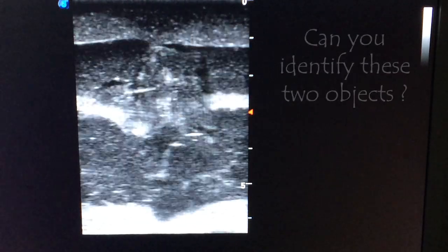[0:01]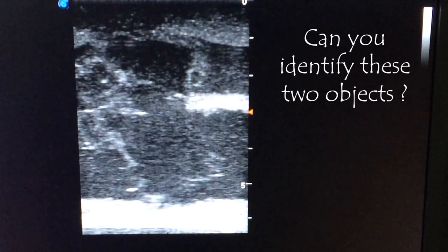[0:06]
You won't see these normally on an ultrasound. Do you know what they are?
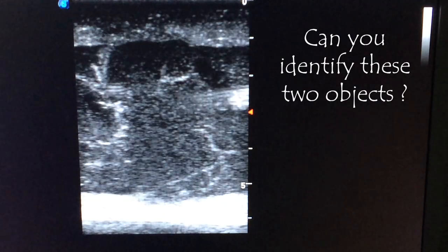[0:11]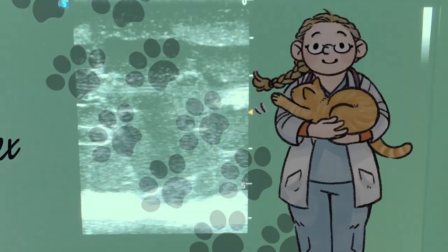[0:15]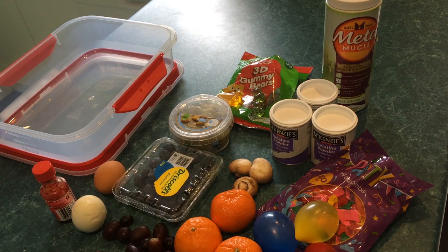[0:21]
Hello everyone, my name is Dr. Ferox and this glorious mess is in aid of making ultrasound phantoms today. An ultrasound phantom is a model that we use to practice, well, ultrasound, and also fine needle aspirates on. It doesn't have to look real, it just has to look real on ultrasound, enough to practice the basic techniques anyway.
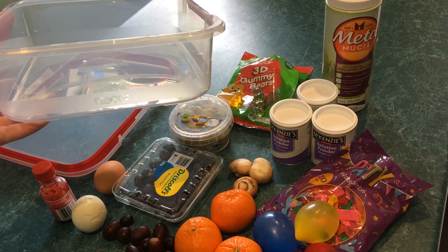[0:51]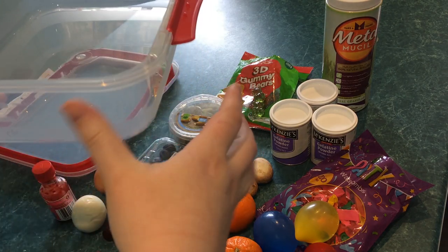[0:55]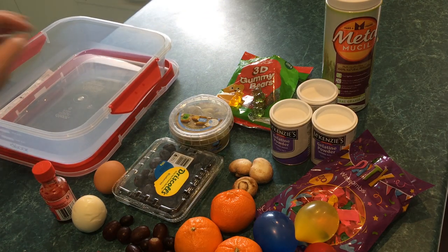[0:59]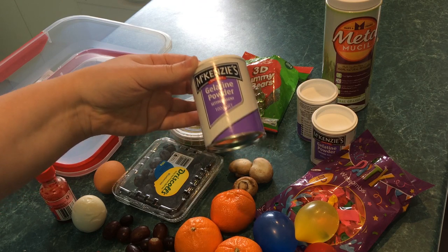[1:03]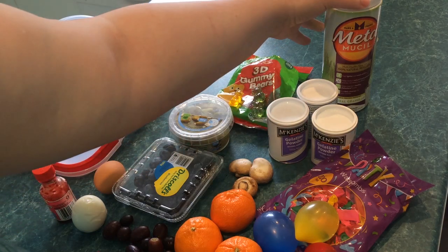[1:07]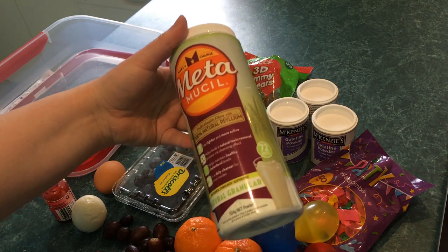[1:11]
So I've got a large container, because this recipe makes about 3.5 litres worth of phantom, which will bring it up almost to the top. It's nice and broad, so we've got lots of space to fit things in. And we're going to make it mostly out of gelatin, because what else sounds like animal flesh other than actual animal protein? And to add a bit of texture, we're going to use some Metamucil.
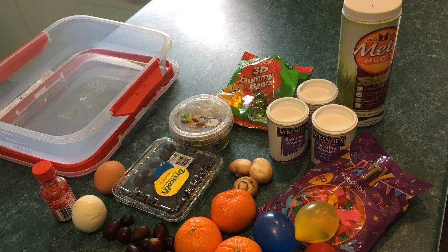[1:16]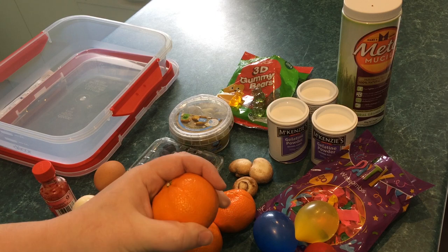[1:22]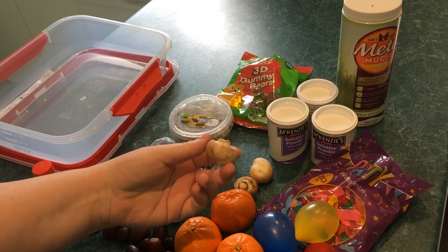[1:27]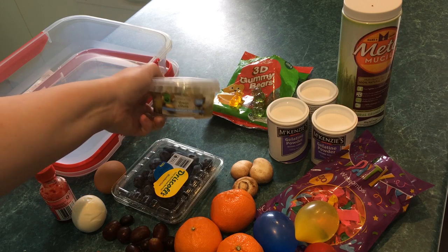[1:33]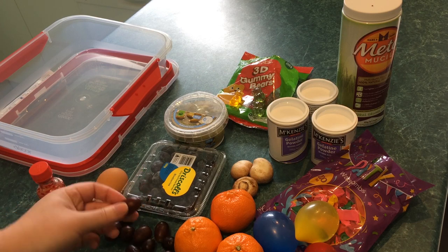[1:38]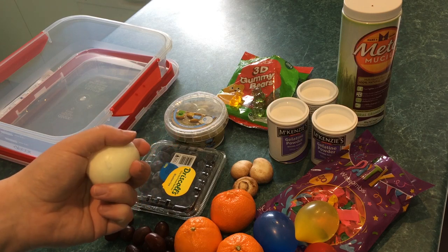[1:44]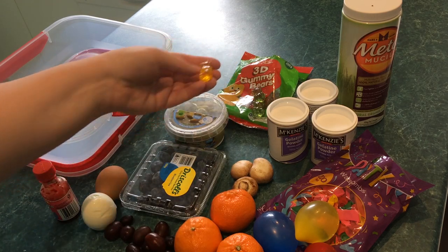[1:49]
Inside the ultrasound phantom, we're going to hide lots and lots of fun things to find. Whether that's relatively large fruits, because the skin on these things shows up really well. Some interesting little shapes in the forms of mushrooms. Olives, because everyone tells me they look good on ultrasound. Some blueberries. Lots of little grapes. A couple of hard-boiled eggs, because the yolk should look different to the white. Some gummy bears just for fun. The ones that are standing up look better than the ones sitting down.
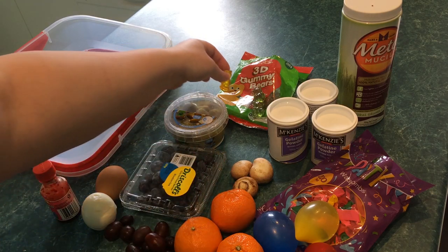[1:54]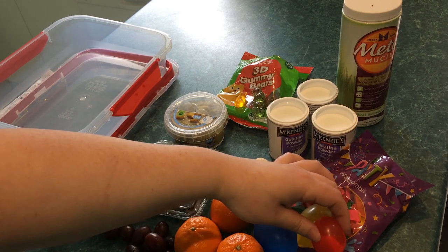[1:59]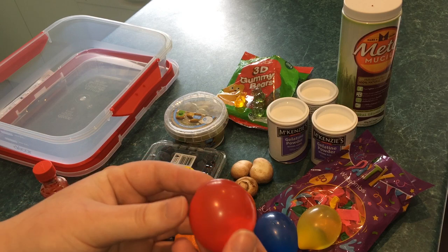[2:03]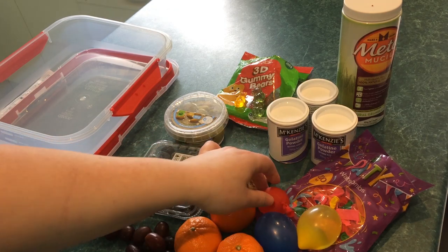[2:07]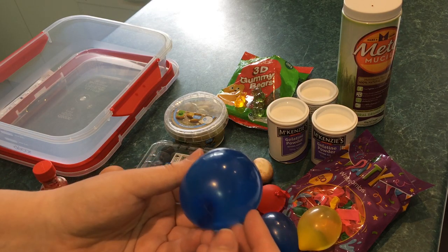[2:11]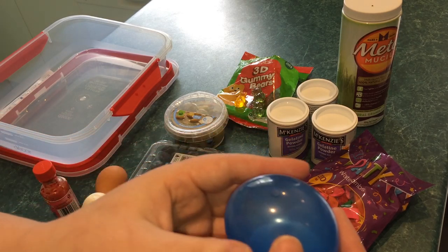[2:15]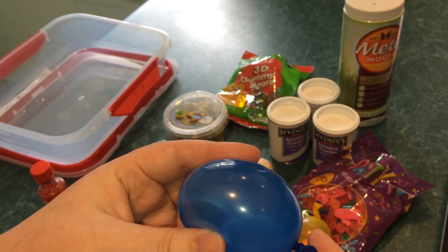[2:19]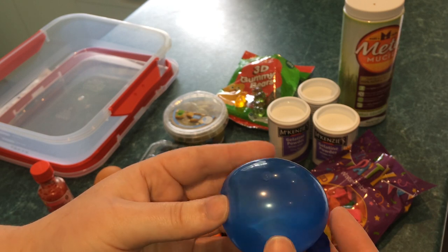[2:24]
And a couple of fluid-filled bladders. Not meant to be anatomically correct, just to practice what they look like. Now, when you're making these, make sure you don't accidentally get any air bubbles in them, because ultrasound won't see through air. So even if you get a little air bubble like this one, and I do hope you can see it, your ultrasound won't penetrate the beam and you won't see it very clearly.
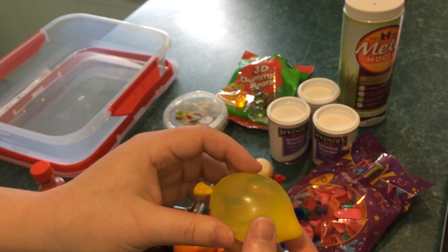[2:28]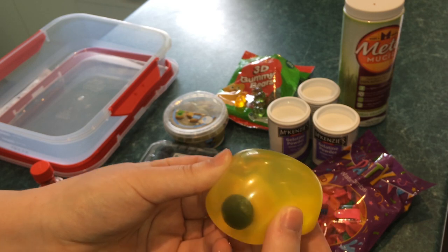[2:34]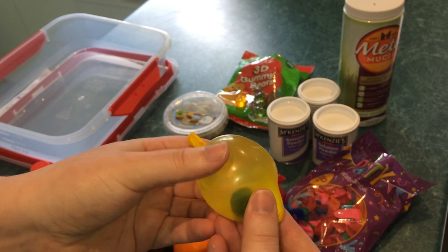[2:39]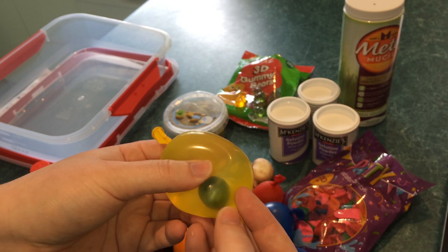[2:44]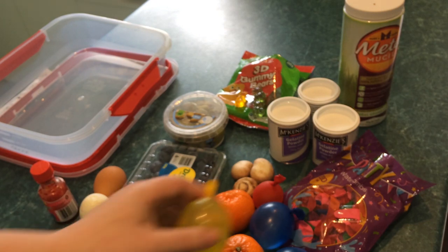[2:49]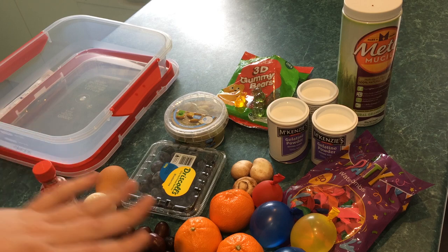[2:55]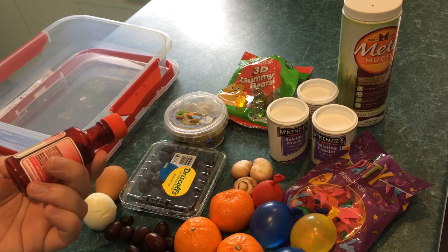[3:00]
If you're feeling adventurous, you can also go and add extra objects inside those bladders, pretending they're bladder stones or something. But once again, because this is a blueberry, it's got little pockets where air likes to get trapped. Make sure that you haven't got any air bubbles stuck on it or it will look weird. Oh, and normally you would use something like milk so that you can't see through the gel when you're practicing. But because this is for an open day when members of the general public get to see it, I'm just going to use food dye instead.
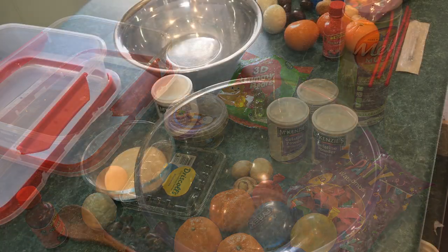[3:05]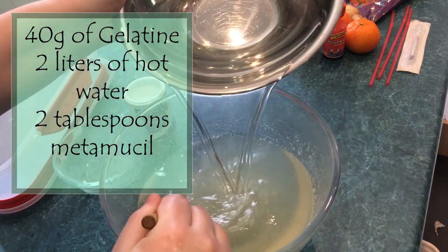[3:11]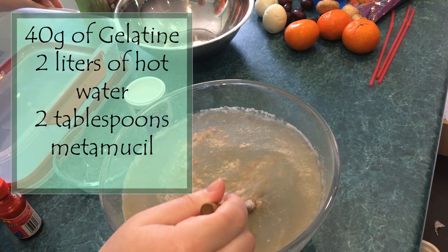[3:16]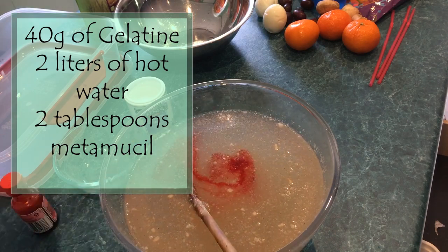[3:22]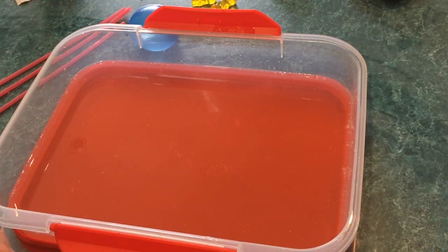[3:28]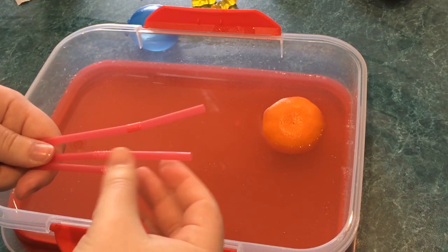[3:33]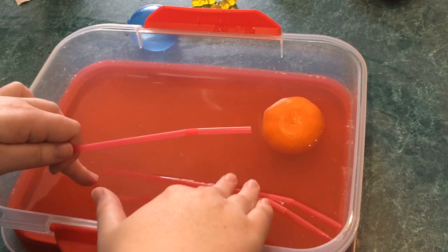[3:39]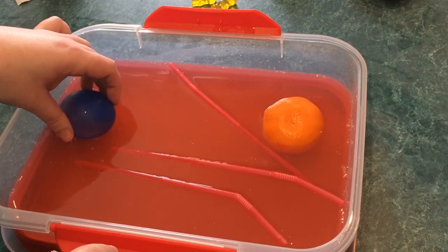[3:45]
So for the bottom layer, we start with 40 grams of gelatin and we mix it up to a total of 2 litres hot water. Then we add about 2 tablespoons of Metamucil to give it a more flesh-like echo texture. Careful not to get any lumpy bumpy bits or air bubbles, because ultrasound won't see through air. To this layer I added the largest, heaviest fruits, because they want to sink to the bottom, a couple of plastic straws, which want to float, but I made sure I had gel mixture running up through them, again because air bubbles make it difficult to see, and I added one of the bladders.
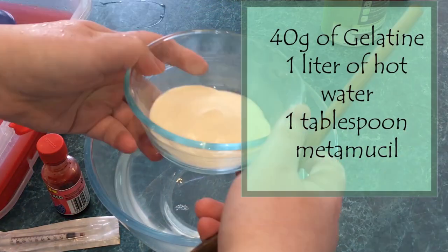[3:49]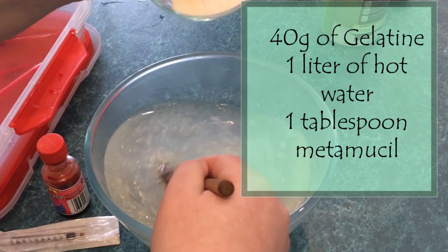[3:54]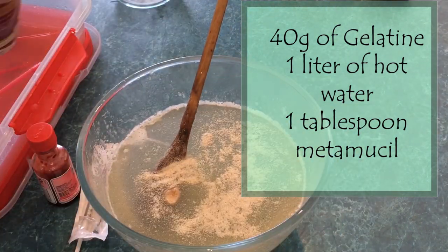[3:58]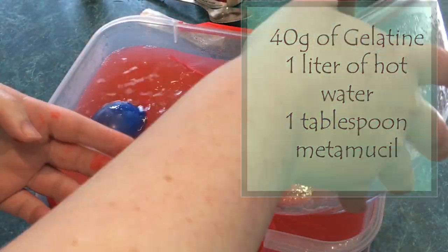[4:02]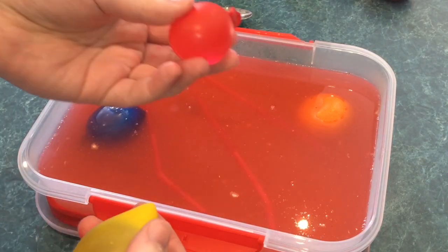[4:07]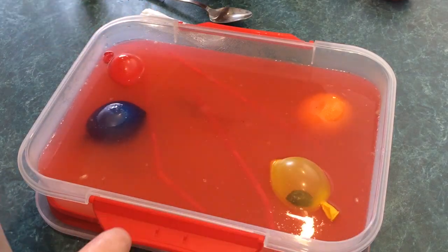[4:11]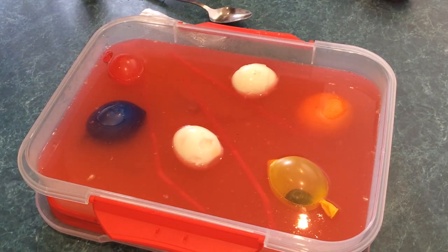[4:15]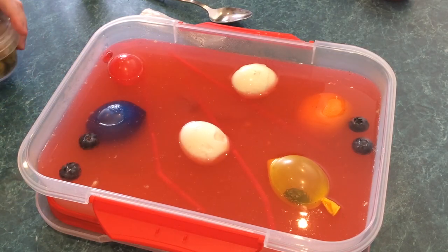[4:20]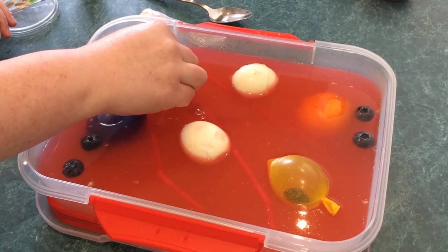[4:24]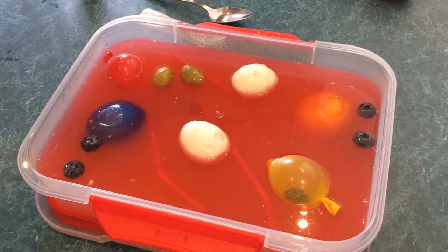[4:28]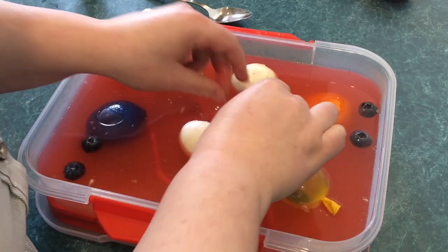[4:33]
For the second layer, it's twice as concentrated, so it's still 40 grams of gelatin, but you mix it up to just 1 litre of hot water and about 1 tablespoon of Metamucil. To this second layer, we add all the other objects that we want to hide in here. So our bladder with our foreign object, the plain one, both of the eggs, which kind of want to sink, all of the different fruits. So the blueberries, the grapes, the olives, add the gummy bears, and remember that they will move, some will float and some will sink, but that's okay because you still have one more layer to go to cover everything else up once it's set.
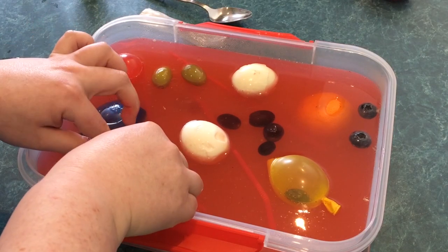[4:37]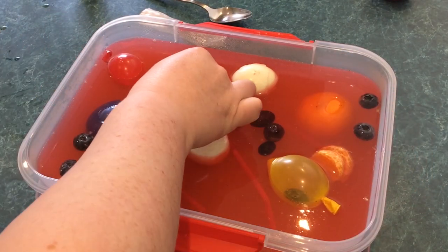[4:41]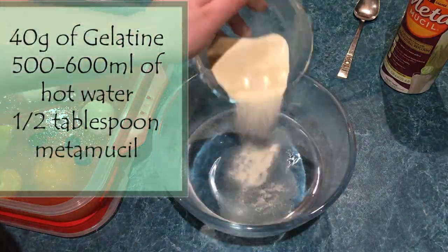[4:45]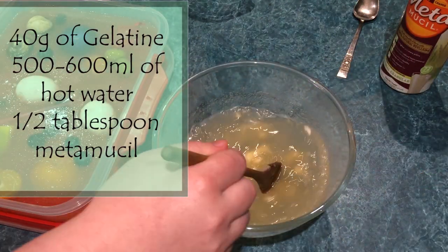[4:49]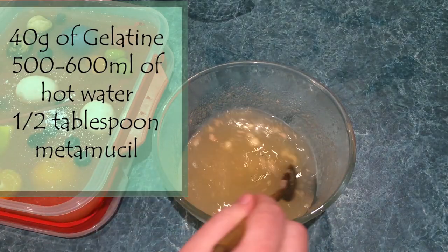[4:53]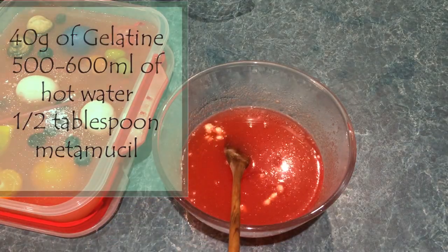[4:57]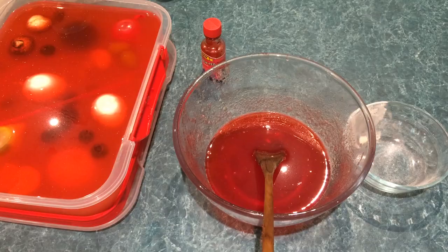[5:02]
The final layer is very concentrated, with 40 grams of gelatin to 500 to 600 ml of hot water, and just a little bit of Metamucil. Again, really important, no air bubbles in this layer. And because I didn't quite have enough, I made some extra just to cover the top.
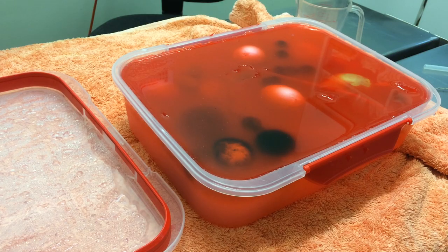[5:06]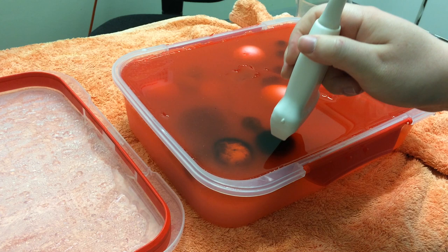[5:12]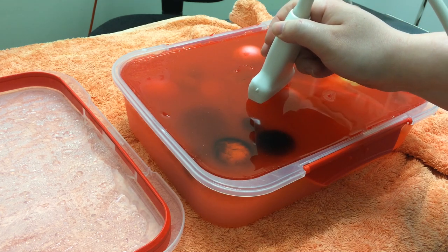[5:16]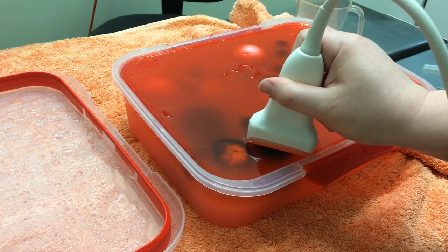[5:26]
Using the ultrasound, you just have to put a thin layer of water across the top of the whole thing and then hold the probe flat against the surface. Move slowly, which is just a good ultrasound technique, and remember to rotate 90 degrees if you find an object that you're not sure about what it is.
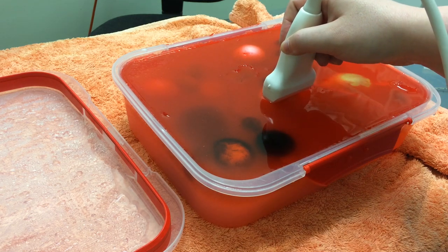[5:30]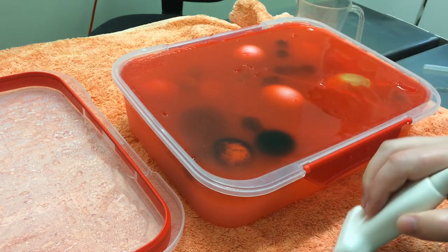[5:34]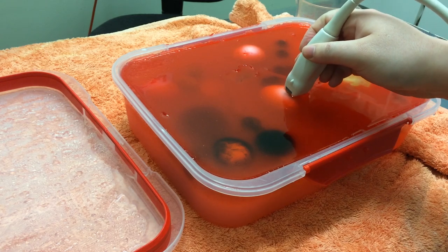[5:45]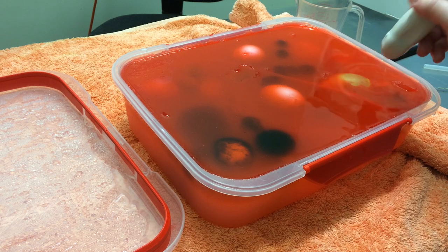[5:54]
I'm using a high frequency probe because I can, because the ultrasound phantom doesn't move or pant, but you can also practice with your lower frequency probes. The footage in this demo is all going to be with the high frequency probe.
So here we have a gummy bear, first seen in cross section, and then rotating the probe to try to get a better view where you can see the ears and the arms a bit more clearly. Because you're getting a cross section of a 3D image, it often takes a little bit of fiddling to get an ideal view.
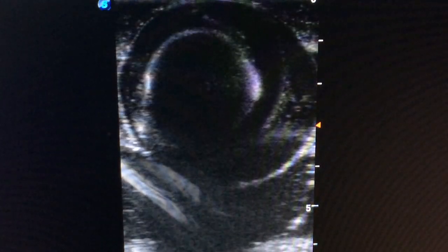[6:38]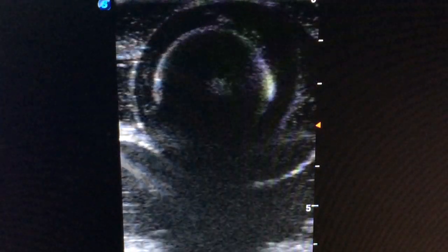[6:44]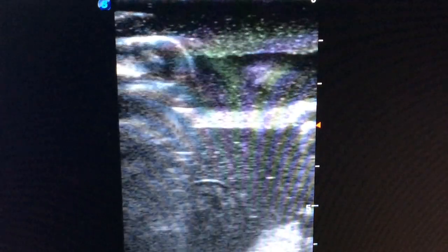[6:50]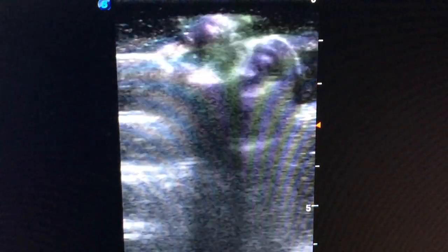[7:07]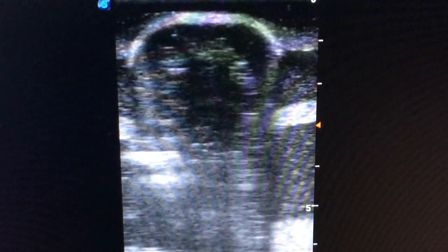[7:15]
Here we have an egg, and you can see the yolk very distinctly from the rest of the white. There's a blueberry. And here is a mushroom, which is upside down. The view is distorted further away from the probe because there is gas trapped in the mushroom. And here's one right side up.
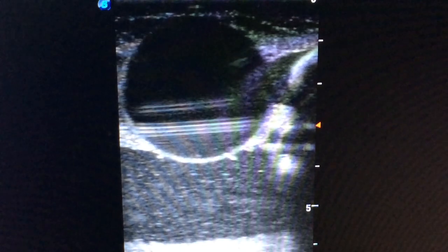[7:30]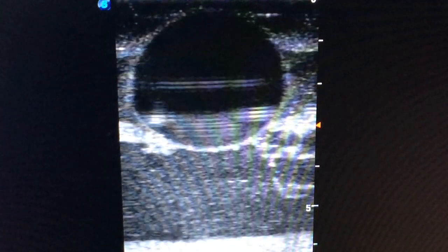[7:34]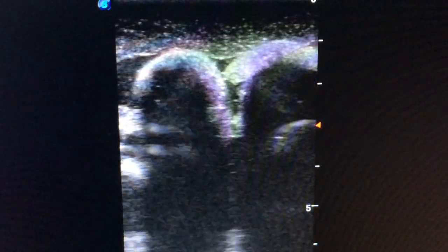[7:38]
You can't actually see anything beyond the gas. Here's an empty water balloon, or rather one that just has water in it. And the more shallow one. And here we have a couple of stuffed olives. You can see the opening where they've been stuffed.
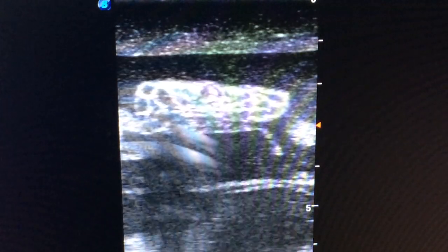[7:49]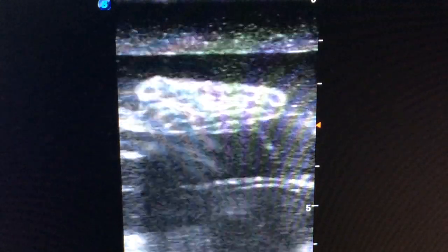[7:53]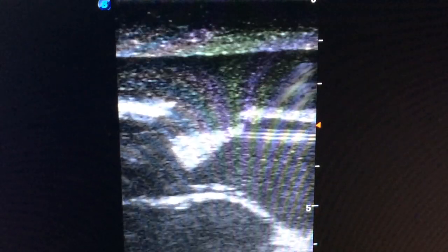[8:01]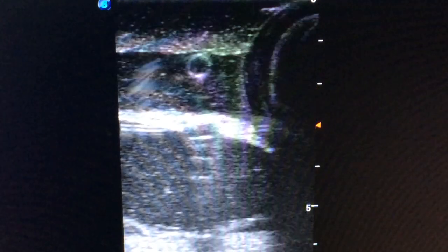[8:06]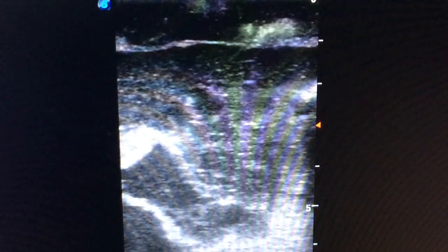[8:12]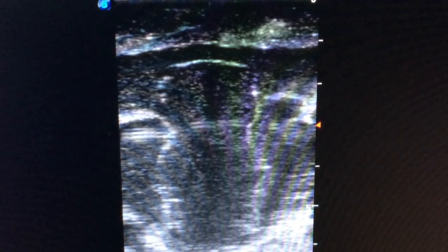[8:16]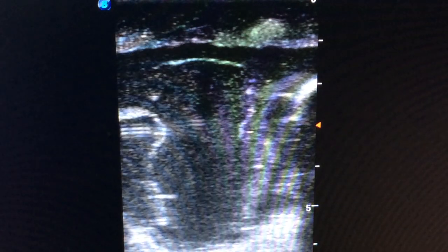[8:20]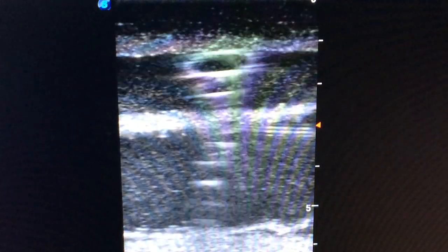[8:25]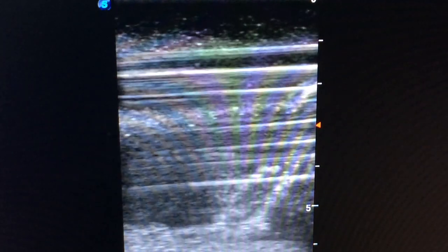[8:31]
A mandarin slice, which is perhaps better viewed if you rotate 90 degrees to get a cross section. And a straw next to the other egg. And of course, a gummy bear standing up just next to it. Now, if you get the straw and rotate it so you're scanning parallel to it, you can see the straight lines and you get this reverberation artifact repeated below it.
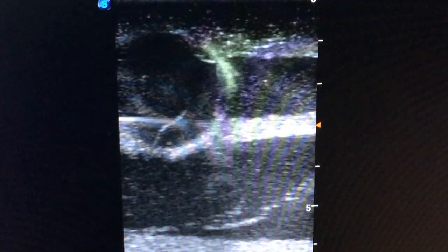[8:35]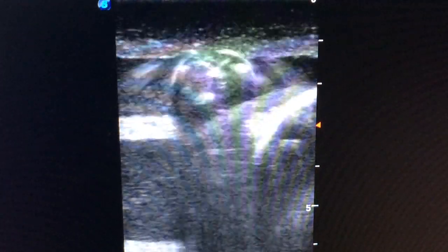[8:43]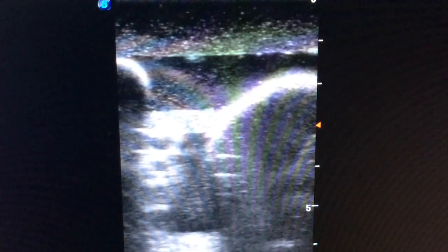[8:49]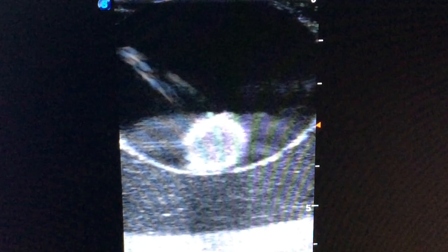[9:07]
Here's our second egg, another blueberry, and the very white line is air bubbles trapped in the skin of the mandarin. You can't actually see the inside of it, you can only see the slices when they're peeled. There's another one. And here's our blueberry in a bladder. And back to a gummy bear.
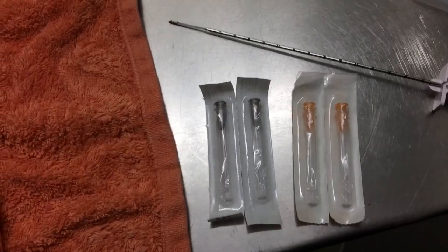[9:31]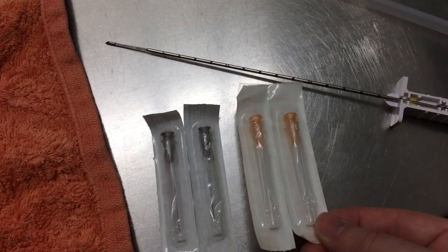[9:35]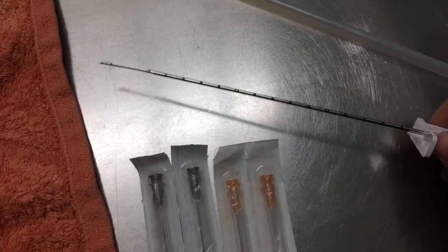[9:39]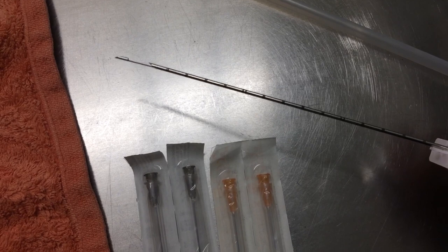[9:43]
Now we're going to practice some fine needle aspirates and biopsy taking, which needs a couple of very fine but extra long needles for poking, and a true cut biopsy, which has a little space behind the point for the tissue sample and a bladed sheath that closes over it to collect it.
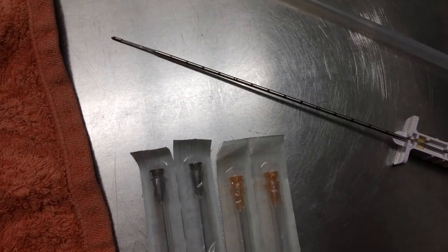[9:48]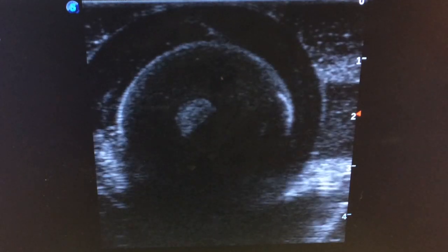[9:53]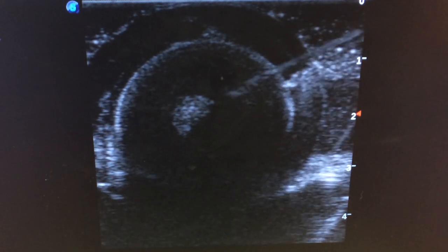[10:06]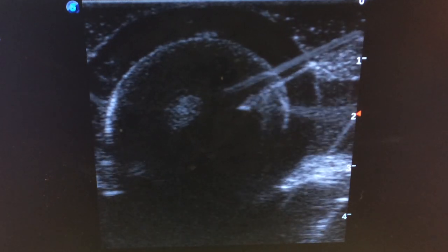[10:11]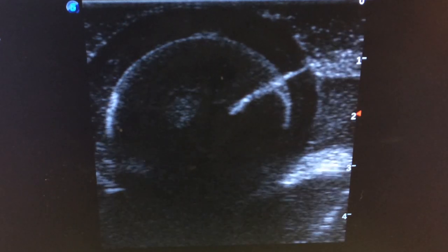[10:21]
So here's our egg again, and we're going to do a fine needle aspirate, aiming for the yolk. So the very, very white point is the tip of the needle. It has some extra echoes around it, but it's the second line. And because this is gel rather than flesh, it's going to leave a trail of air bubbles where it's just been. So you can see how accurate you were.
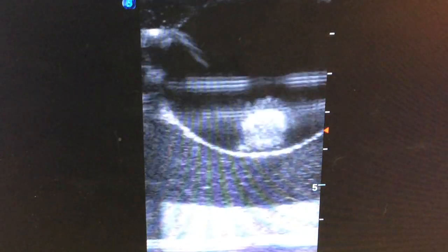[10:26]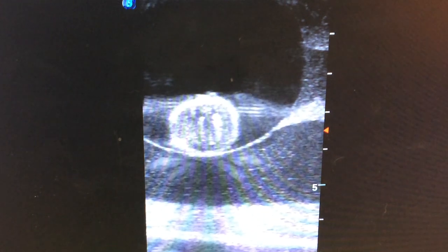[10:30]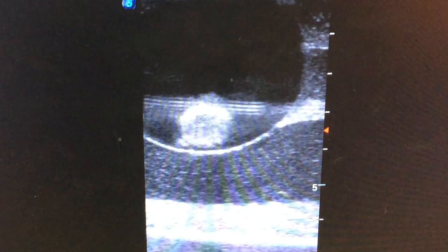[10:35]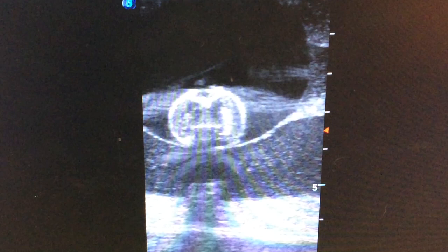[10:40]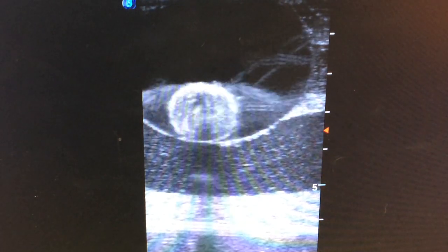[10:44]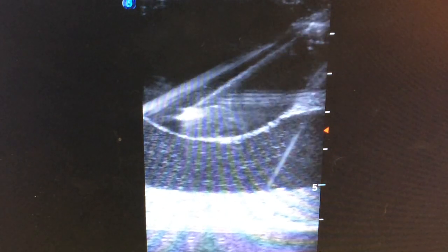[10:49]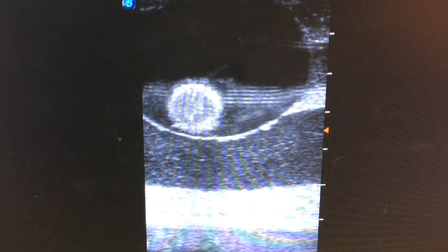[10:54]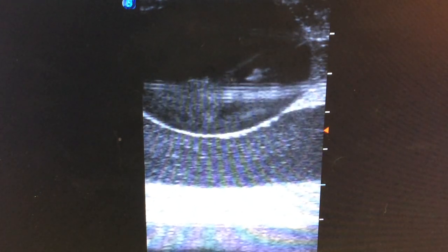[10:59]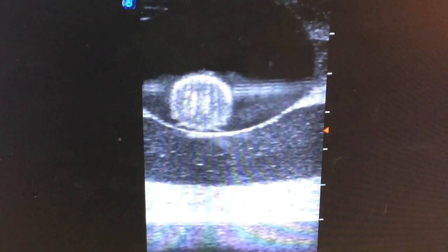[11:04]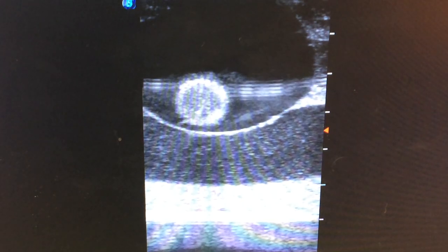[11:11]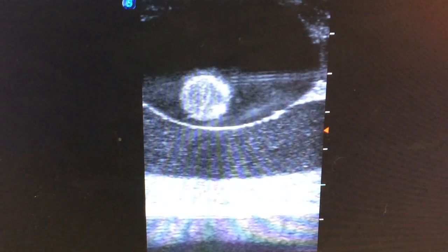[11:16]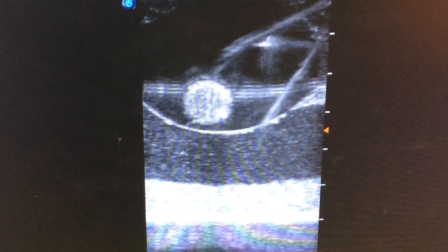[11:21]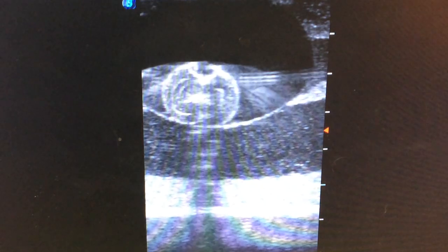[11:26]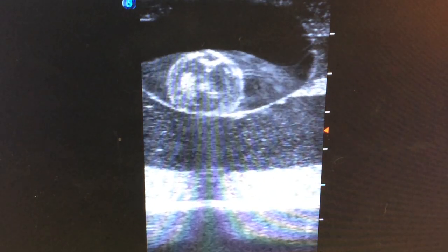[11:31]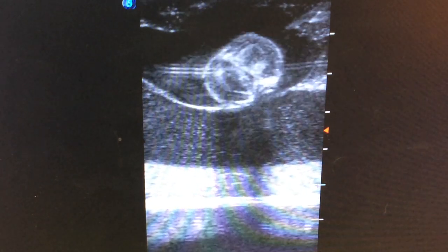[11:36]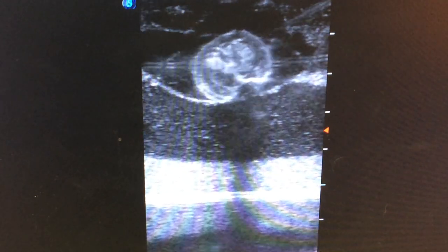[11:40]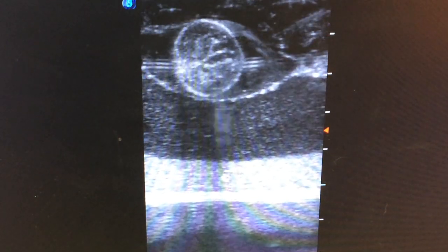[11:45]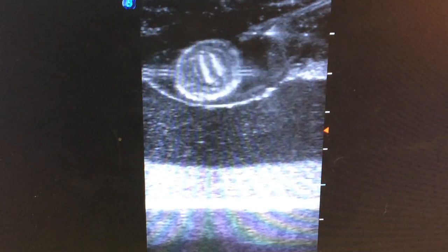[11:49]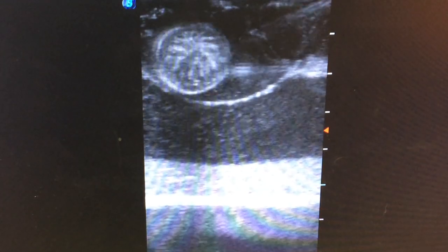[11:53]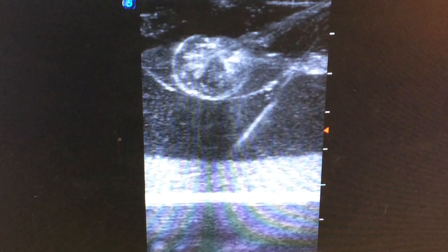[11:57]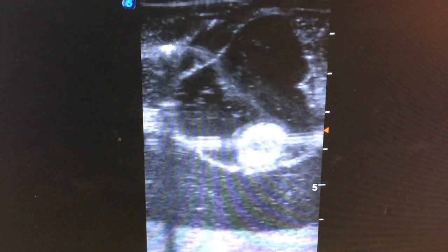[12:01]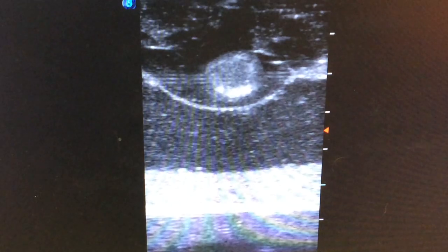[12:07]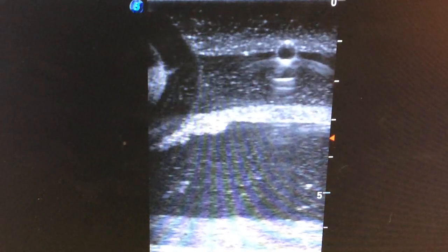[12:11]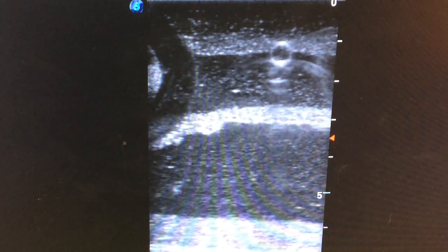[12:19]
Now we're going to try to hit the straw. There we go. So you can practice hitting very small targets.
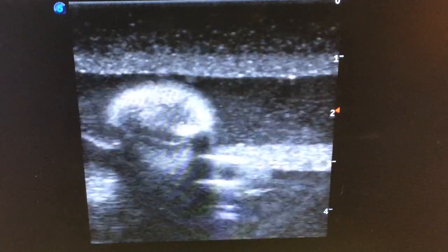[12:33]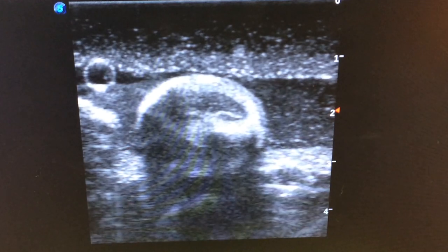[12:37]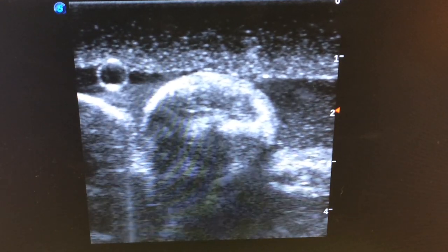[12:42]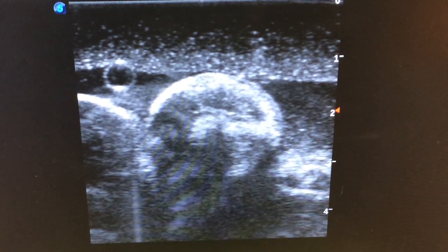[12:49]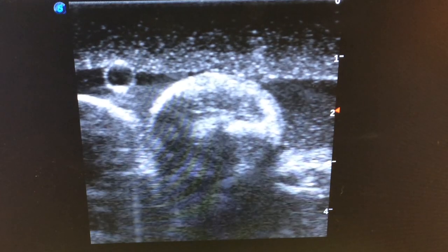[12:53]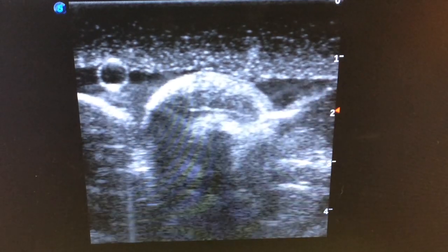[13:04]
And here is a grape that we're going to try to get a Tru-Cut biopsy on. So you will see the shape of the needle as it comes into the ultrasound beam is different, because it will actually have that little divot for the tissue sample. So you can see the point and then the rectangular shape behind it, which is where the sample is taken from.
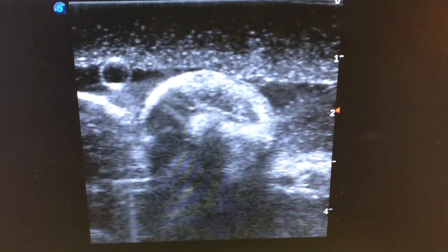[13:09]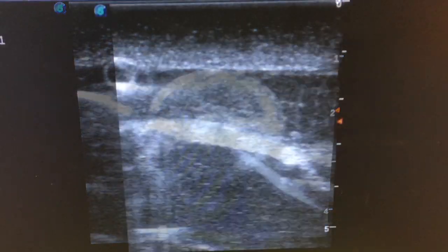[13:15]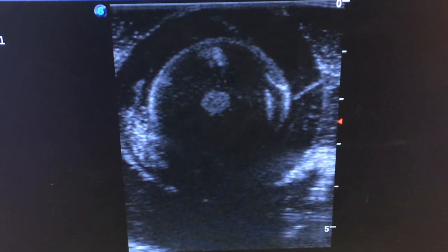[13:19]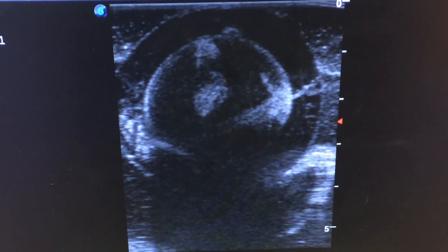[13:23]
Here is an egg yolk to do the same thing. So you're not collecting a sample at the point, you're collecting your sample from behind the point. And once again, you can see where you've been.
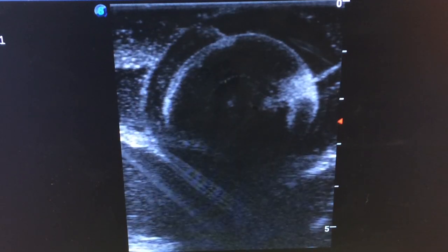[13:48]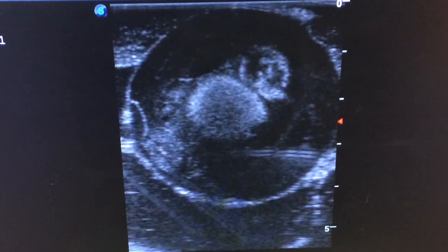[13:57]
So now you know how to make your own ultrasound phantoms at home for hours of fun practicing stabbing jelly in the clinic.